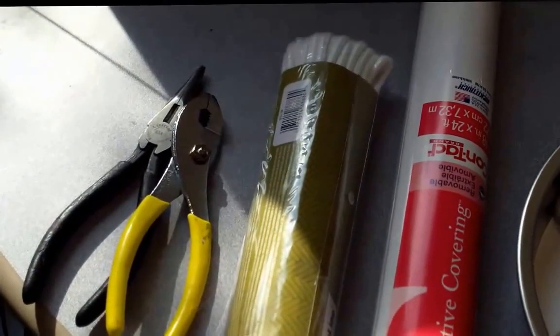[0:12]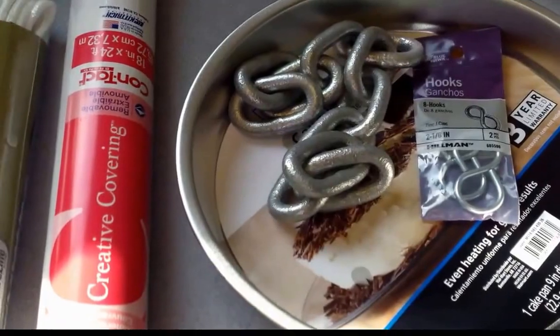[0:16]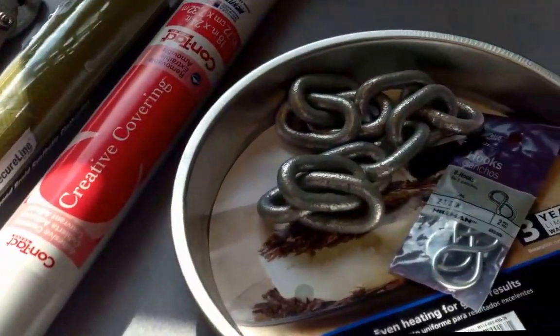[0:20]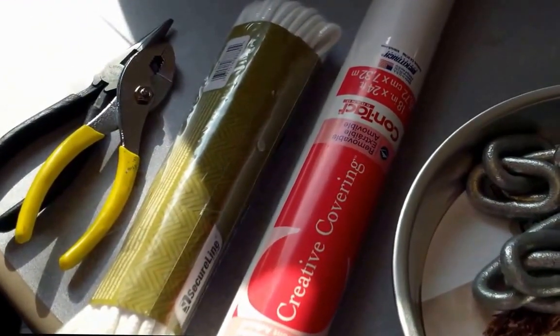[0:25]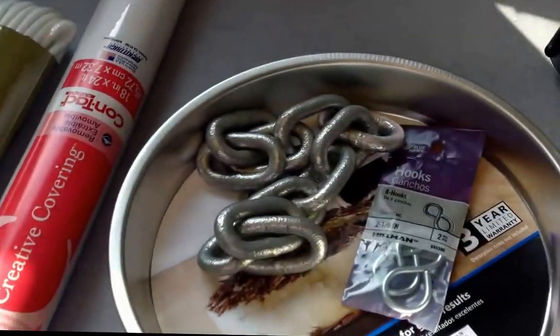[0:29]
Okay, here's another limnology hack. If you are having a limnological emergency and really need to be able to take a Secchi disc transparency reading and you don't have a Secchi disc, you can put one together pretty easily and pretty cheaply. And this is pretty much all the stuff you need in order to do it.
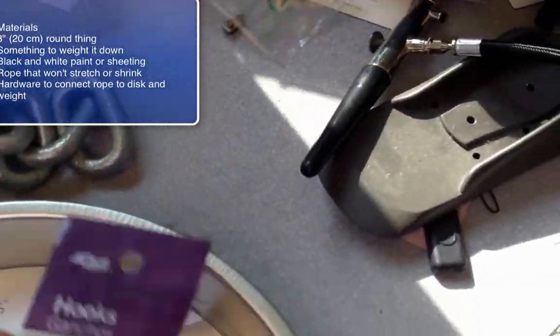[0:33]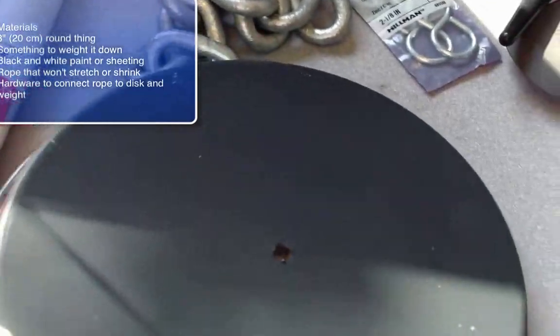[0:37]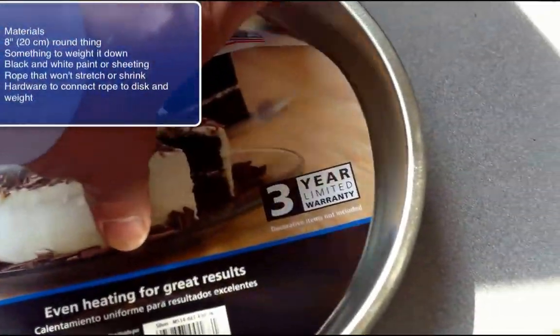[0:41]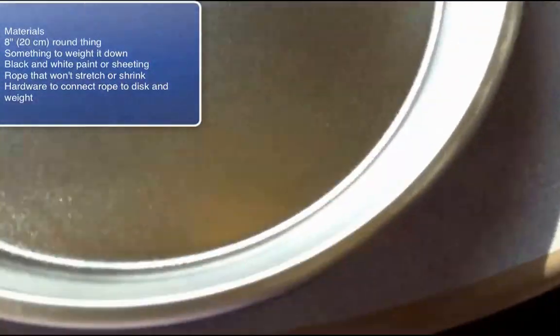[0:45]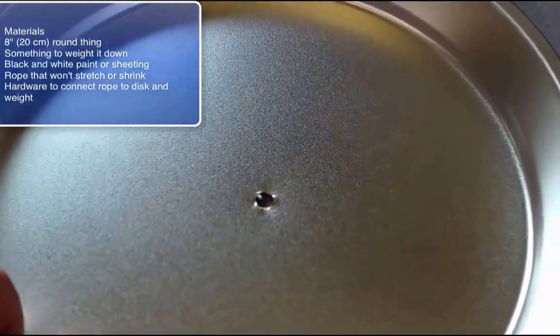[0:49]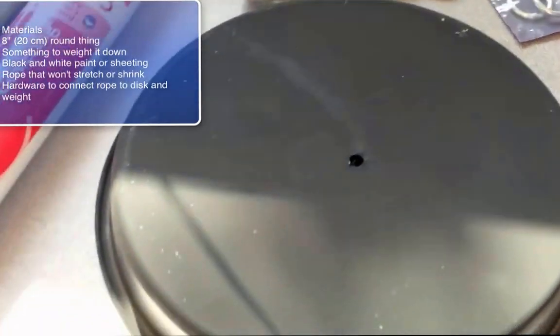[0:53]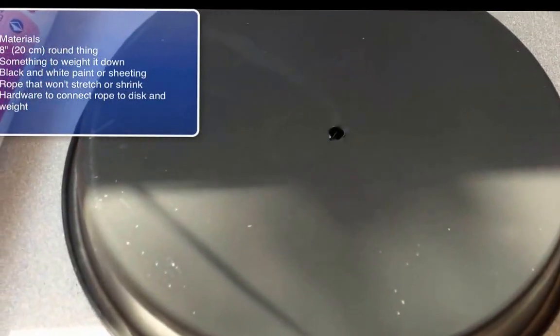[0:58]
The first thing you need is something round, about 8 inches in diameter. This is a cake pan. It cost 88 cents. You can find it at a discount store. What I've done for this cake pan is to drill about a quarter inch hole dead center in this thing. And the other thing I've done is to get a little black paint and paint the bottom surface of it. And the reason for that will be apparent in just a second.
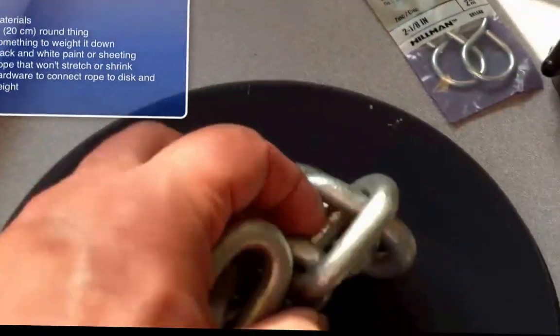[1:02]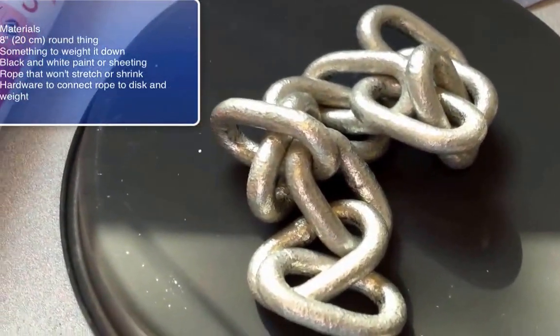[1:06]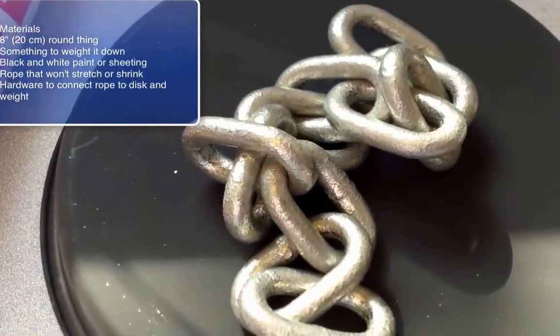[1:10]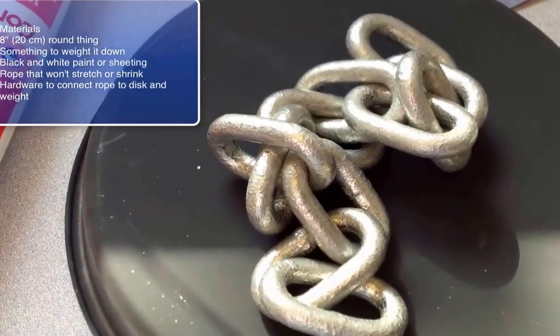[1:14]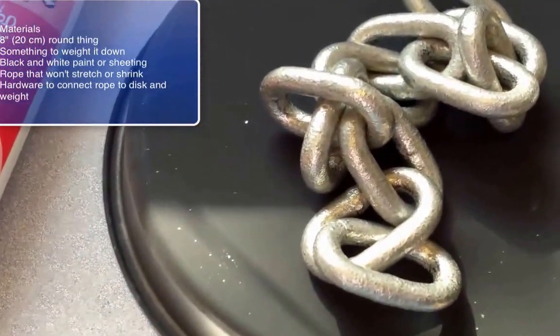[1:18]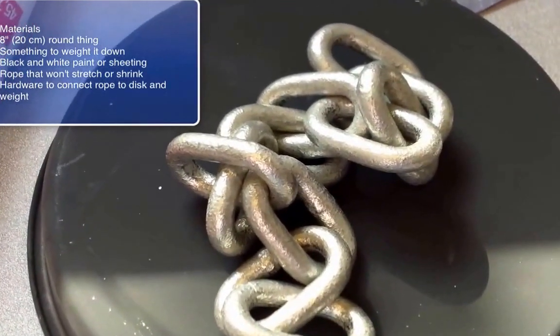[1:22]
The other things we need are something heavy. This old galvanized chain stuff. Well, you probably have something heavy around you can use for this, but all you need is something to go on the underside of your Secchi disc to hold the thing down when there's some waves or currents. So this was the cheapest, heaviest thing I could find in a hardware store. It's about 20-30 centimeters of heavy galvanized chain.
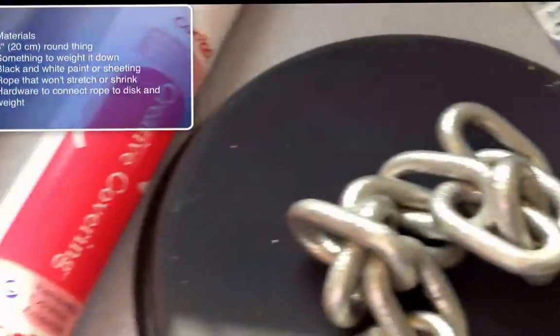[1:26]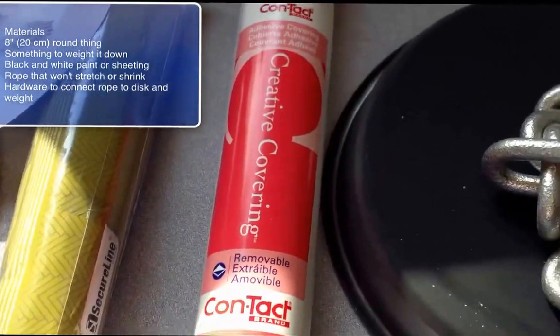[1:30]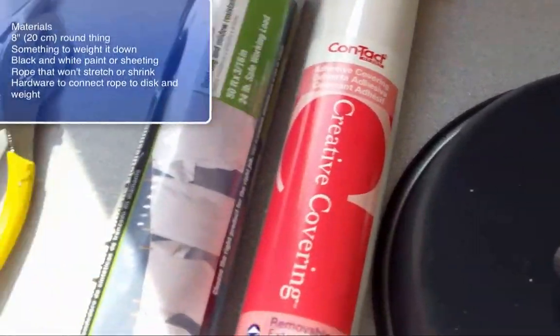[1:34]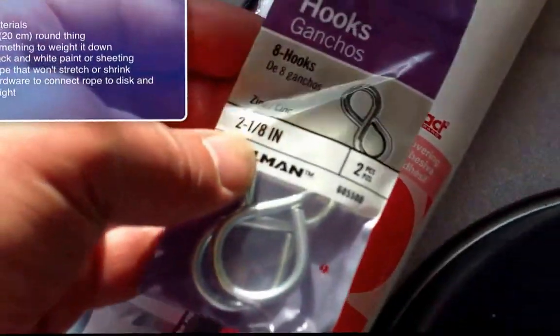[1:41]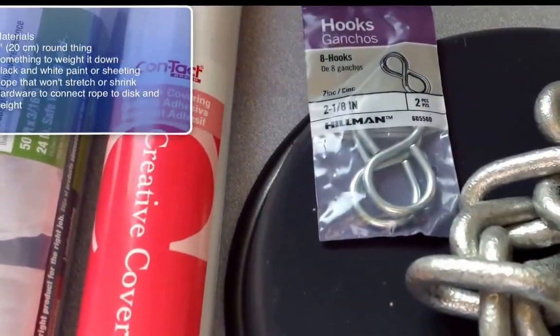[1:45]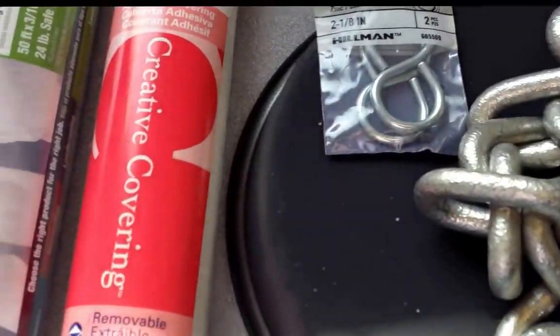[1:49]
You probably could use some of this contact paper. This is a shelf liner. It's plastic stuff with adhesive on the back. And here's some non-stretching rope that you'll probably need too, and you need something to attach the heavy thing to the Secchi disc. I found some kind of double-eyed hooks here, and we'll see if we can make that work. And you might need a couple pair of pliers and a pair of scissors, and that's pretty much all you need.
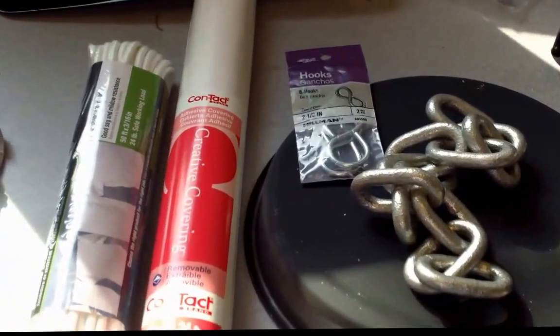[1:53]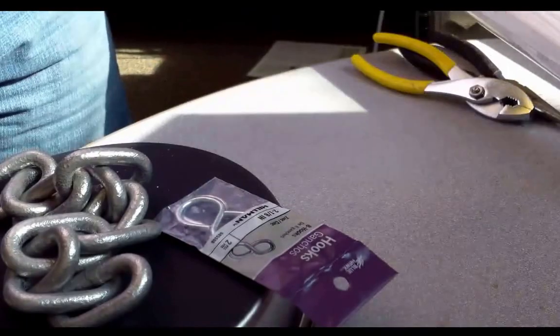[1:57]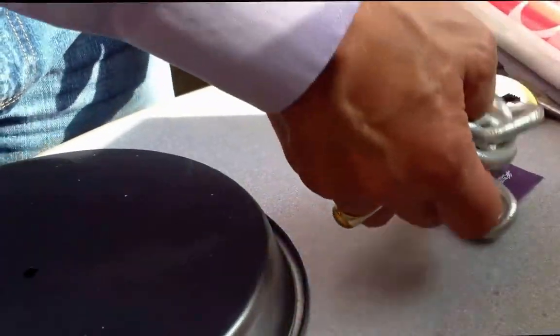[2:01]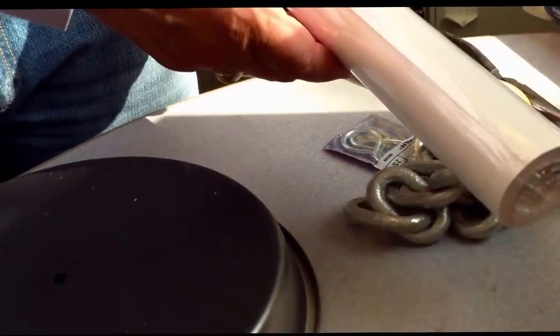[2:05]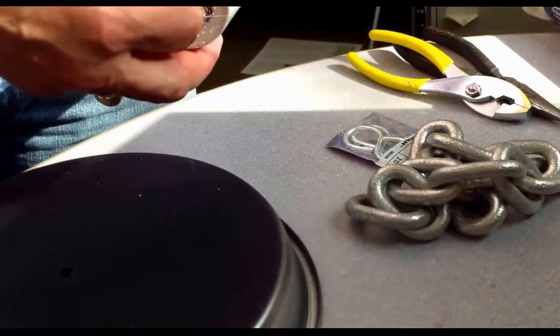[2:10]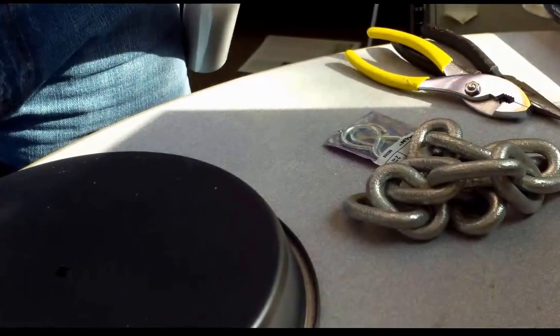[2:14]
So here's one way to do this, and I'll try and do it kind of quickly so that you won't get too bored. But the idea here is that we need to use this as a disc. We have to get some white pieces on here, and then we need to attach it to the heavy weight and the line and calibrate the line.
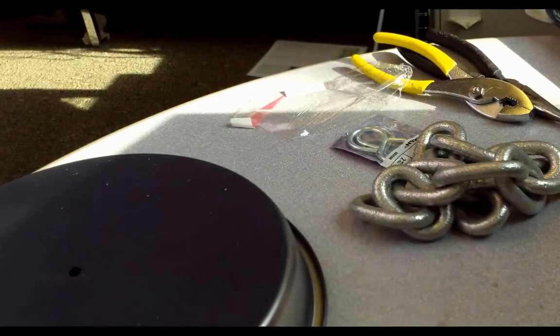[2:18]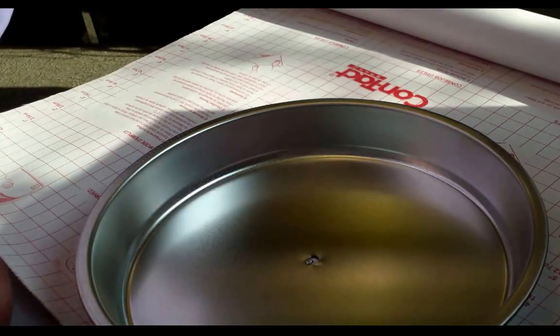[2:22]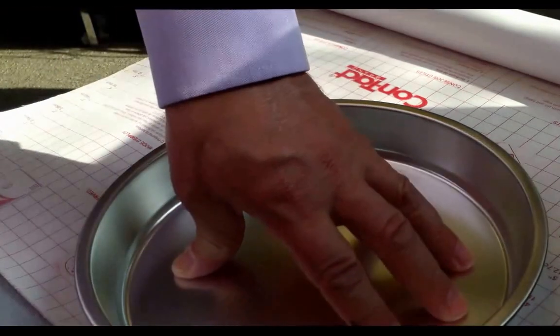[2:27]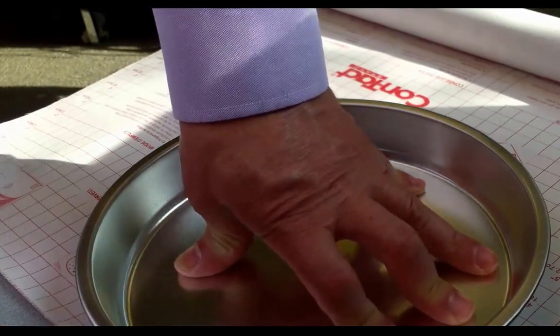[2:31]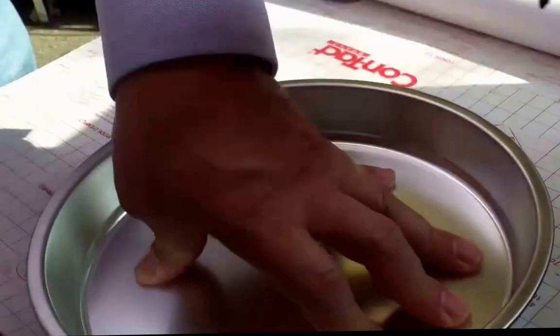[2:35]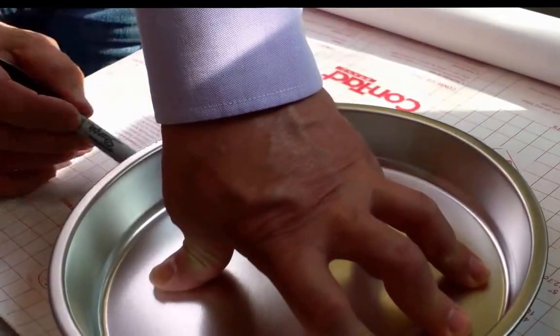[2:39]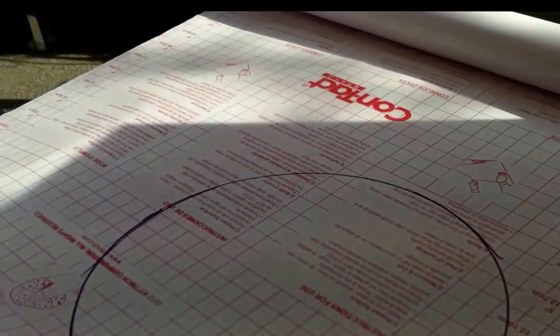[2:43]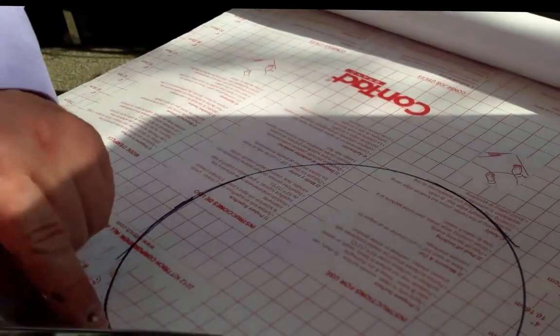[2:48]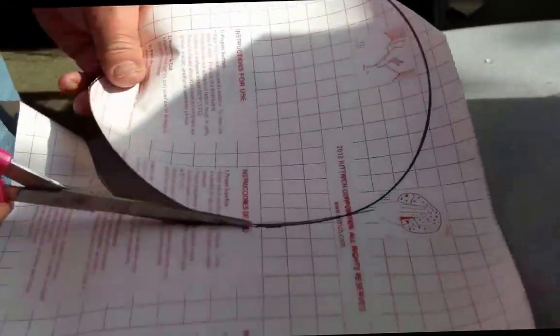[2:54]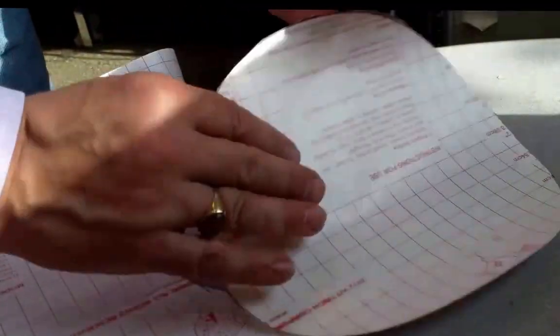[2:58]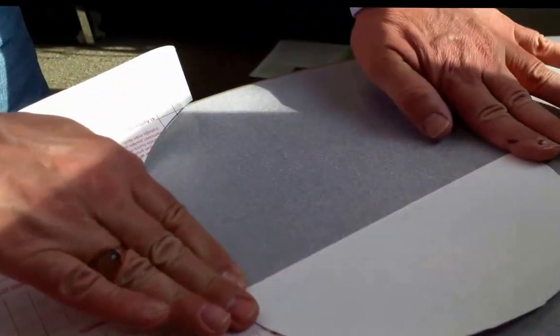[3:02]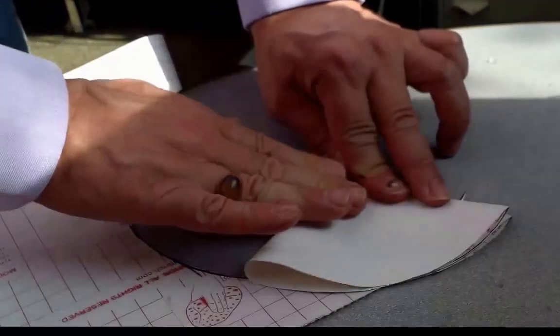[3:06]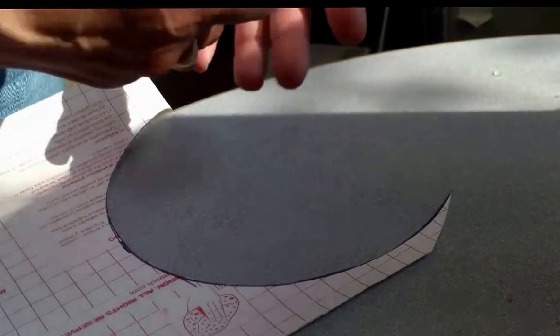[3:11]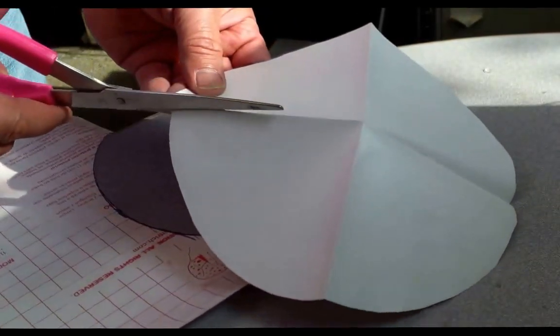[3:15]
Normally a Secchi disc has four quadrants, two white ones and two black ones, at least the ones we use. So what you first want to do is get a circle of white, and you can just trace around the black bottom of this lovely cake pan. Now what we need to do is fold this in half and in half again, and that'll tell us where our four quadrants are. And then you simply want to slice out two of them. You basically cut down these lines.
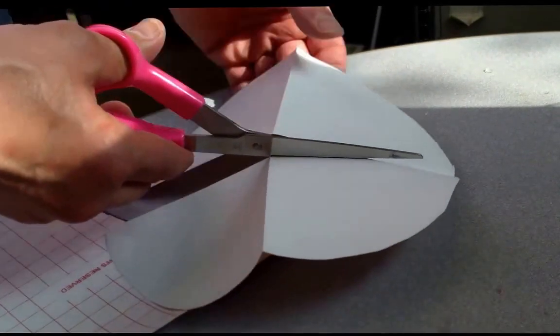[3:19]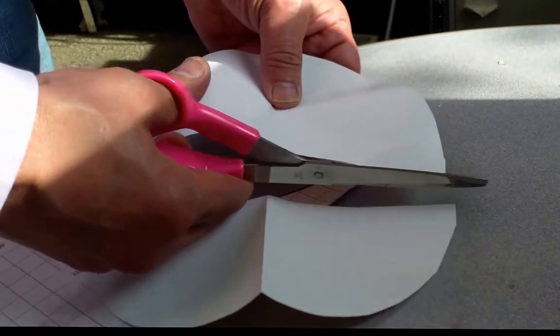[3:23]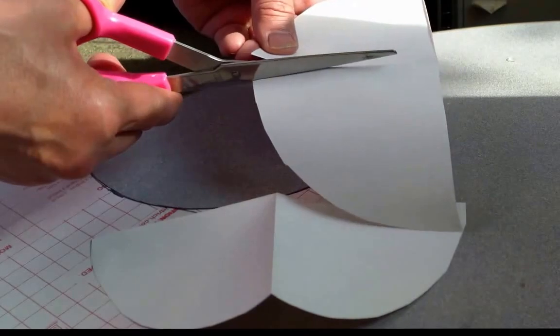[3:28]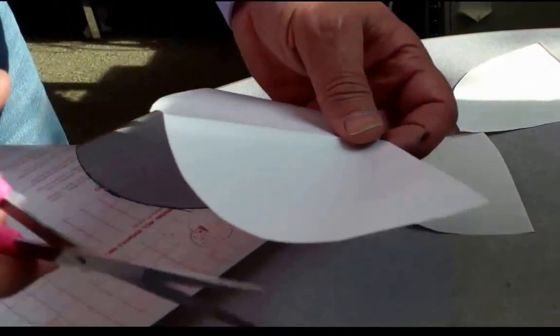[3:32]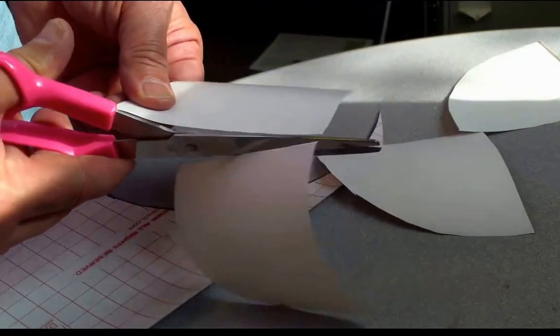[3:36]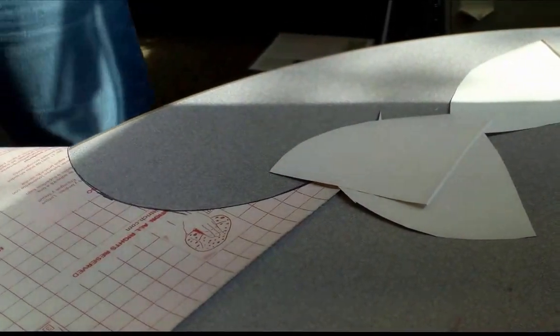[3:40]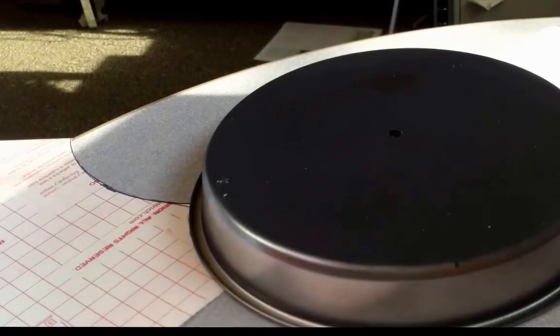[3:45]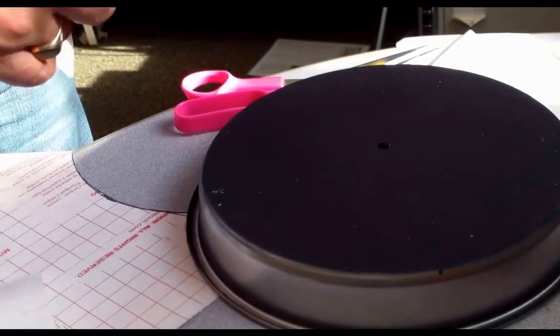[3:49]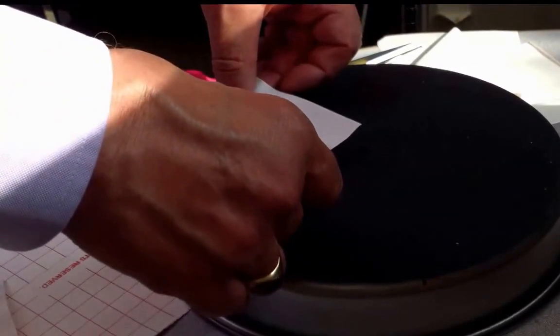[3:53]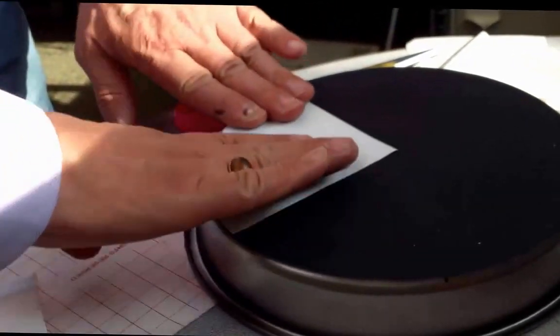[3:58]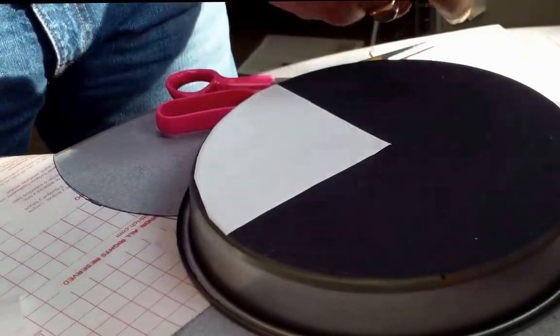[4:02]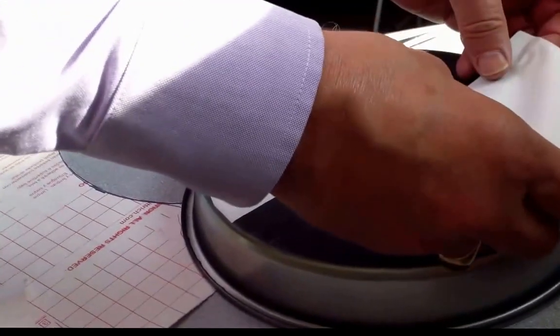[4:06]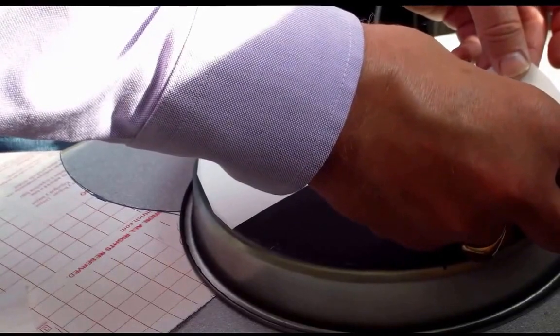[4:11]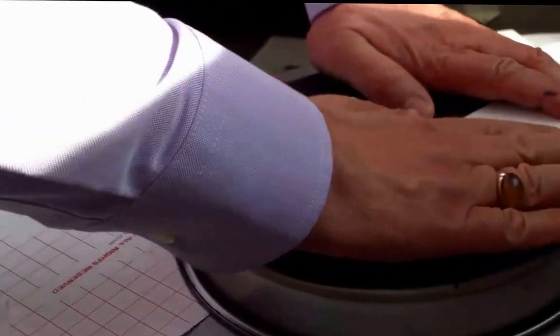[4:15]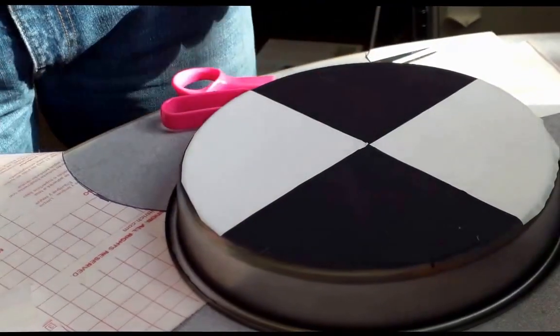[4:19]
You could do this with actual paint on the pan, or you could do it with duct tape, black and white, or whatever you want to do. The idea is to get two quadrants of white and two quadrants of black on the bottom of the cake pan. Just remove the backing from this plastic material and place it on the bottom of the cake pan. Try to get it straight, although it probably isn't super critical. So there we have our Secchi disc created.
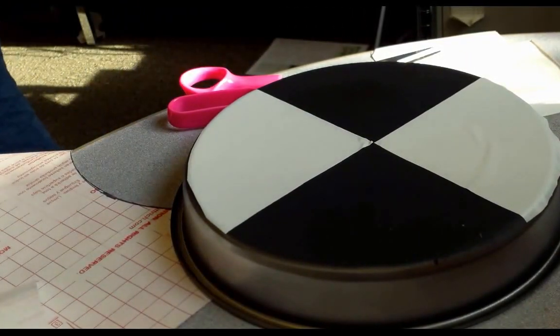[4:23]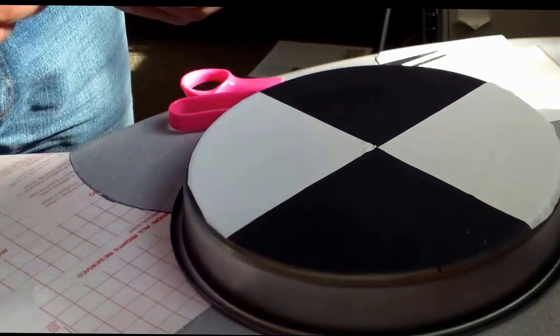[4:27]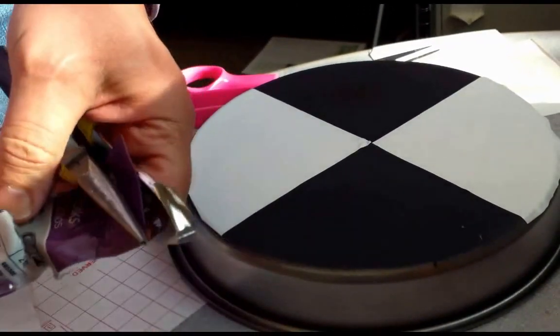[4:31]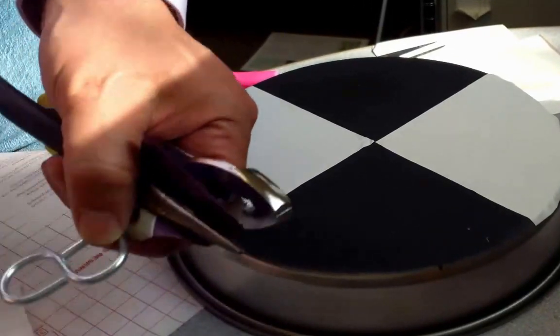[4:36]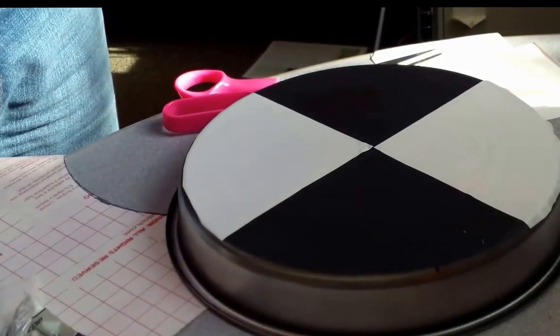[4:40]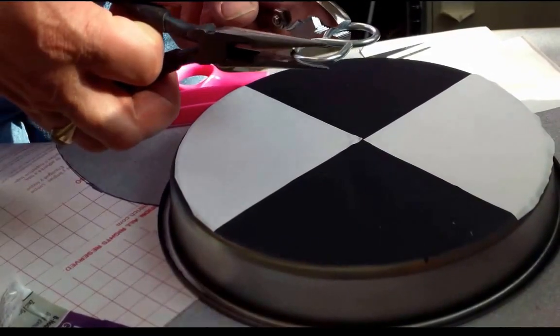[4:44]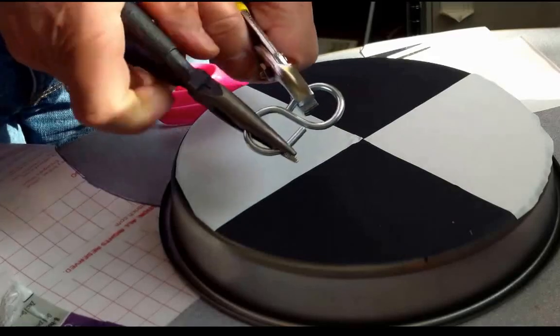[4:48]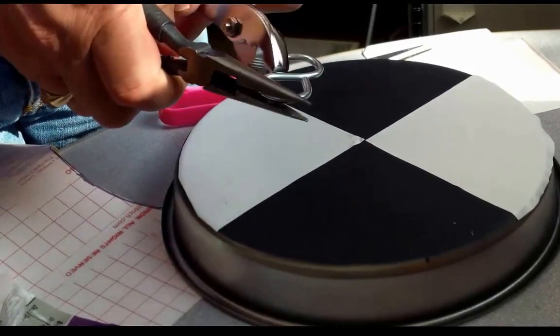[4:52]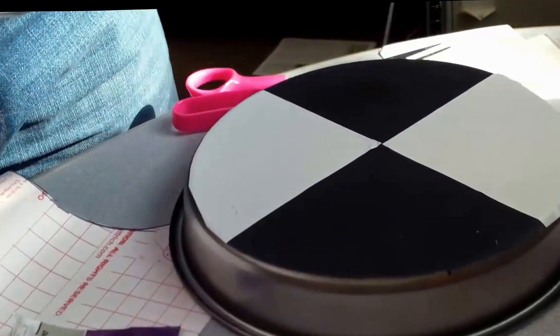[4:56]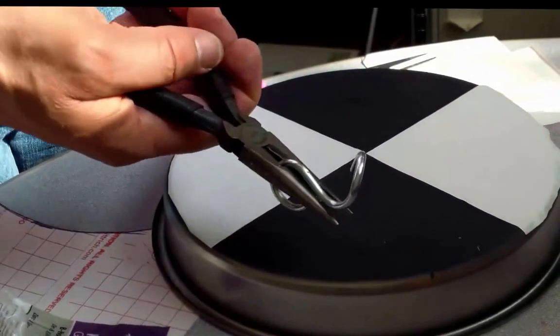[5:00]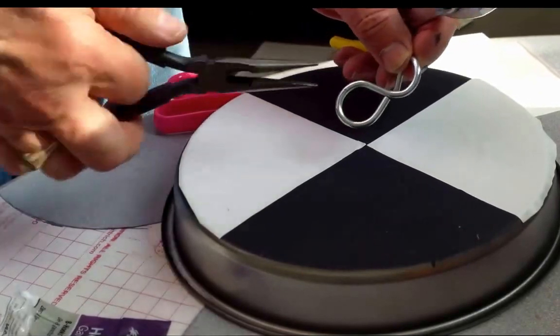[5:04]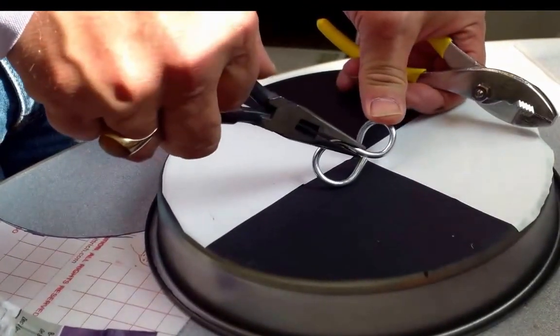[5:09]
The next step is to hang the weight on the bottom of it. So we have these things, but you can figure out any way you want to do this. This is one that I thought might work really well, and we'll see in just a second if I was right. Basically what I'm doing is leaving one loop intact to go on the top and opening the other loop to go down on the bottom to hook onto the heavy chain that I have, and I hope that'll work okay. Well, that was a bit of a tussle to get this thing open, but I'm doing it in my office with really minimal tools, so I figure you may be doing this in the field yourself.
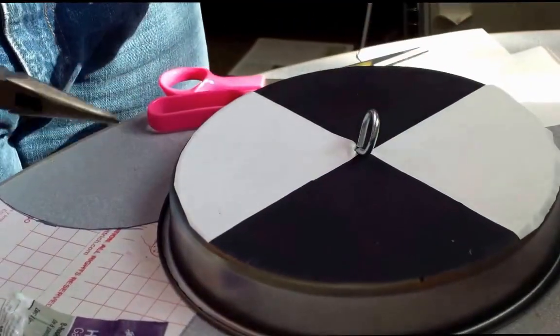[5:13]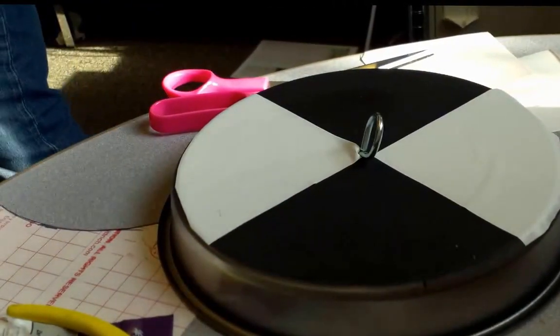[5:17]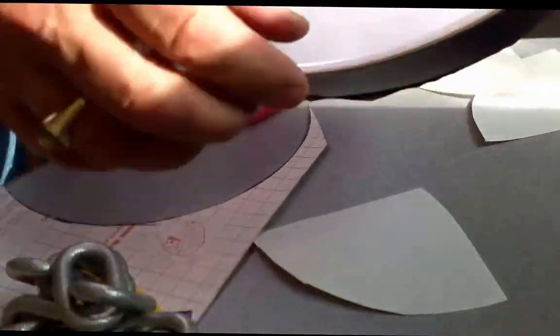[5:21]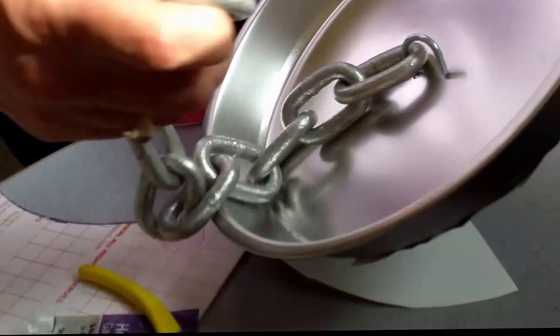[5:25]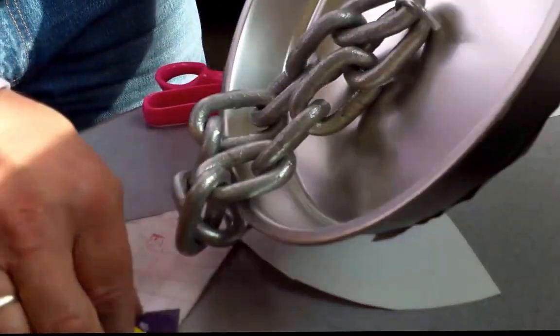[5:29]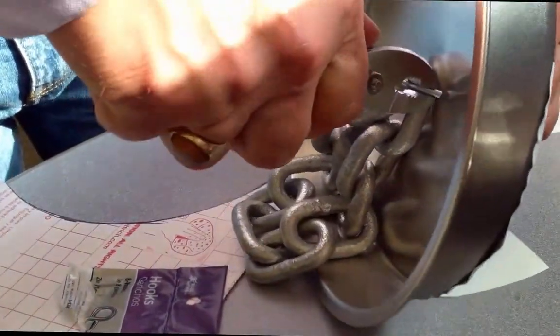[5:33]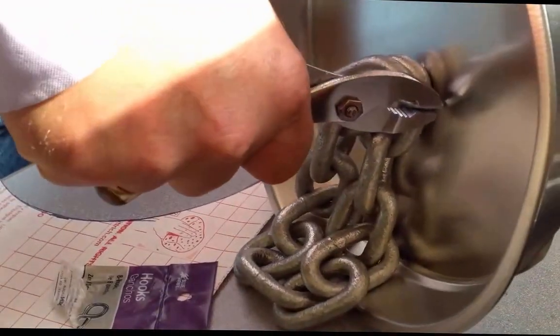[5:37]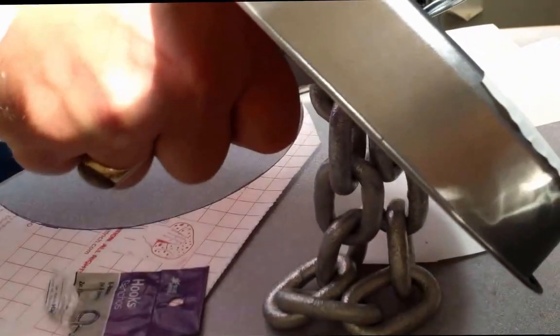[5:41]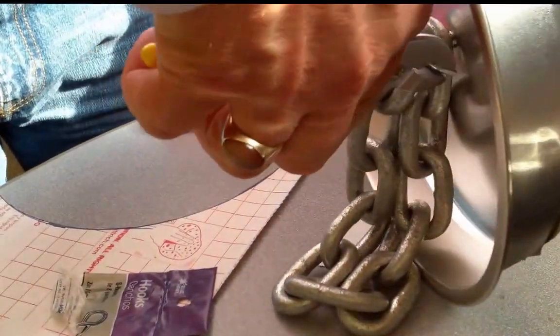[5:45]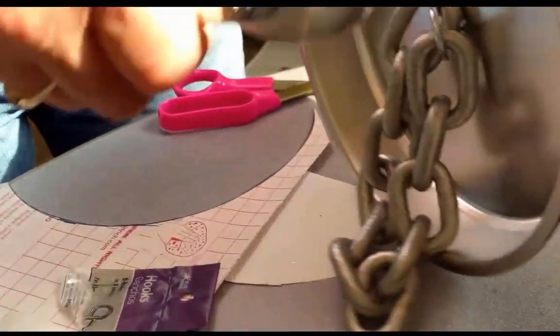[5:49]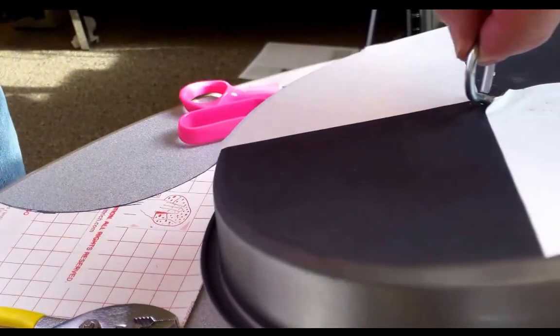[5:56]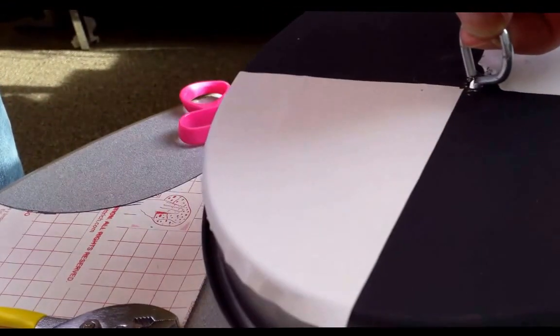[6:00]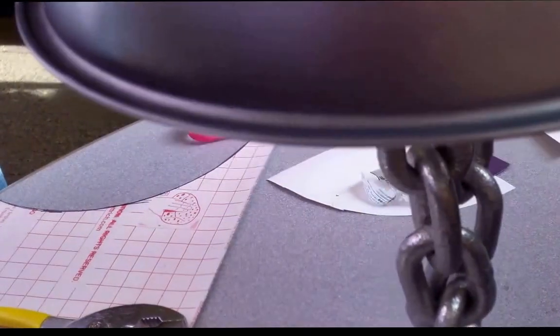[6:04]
Now I place this thing through this hole here, and we've got a loop on the upper end. Hopefully, down under here, we're going to be able to loop two links of the chain on here, and maybe if we're lucky, there'll be room to close this hook back so that the chain won't fall off. Take a couple of pairs of pliers. A bit violent. Yeah, so there I've got the chain connected. You might have to mess around with the connector a little bit until you can get it to hang pretty much horizontally, so that when you lift it into the water column, it's actually horizontal. But this will work pretty well, I think.
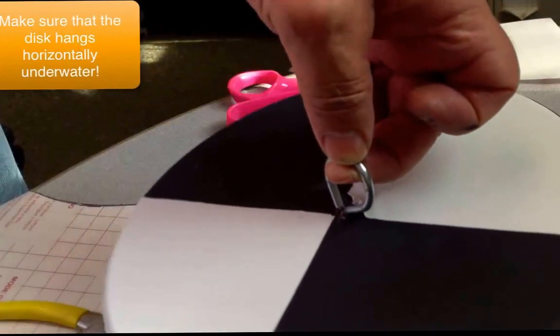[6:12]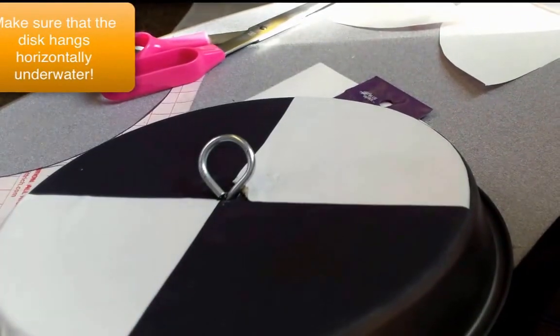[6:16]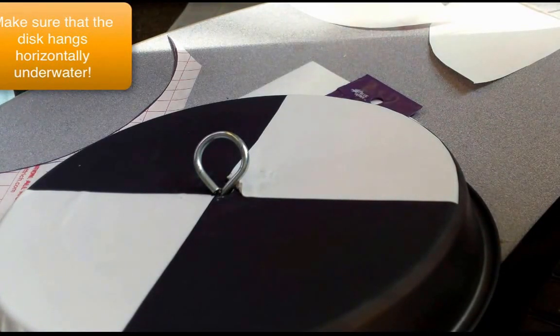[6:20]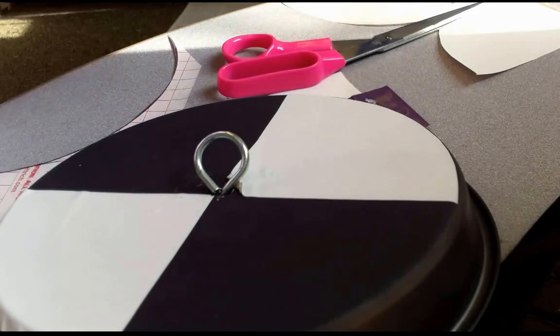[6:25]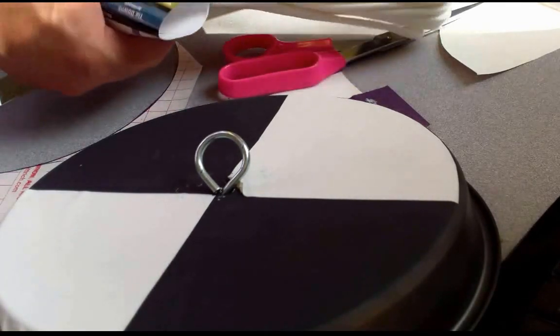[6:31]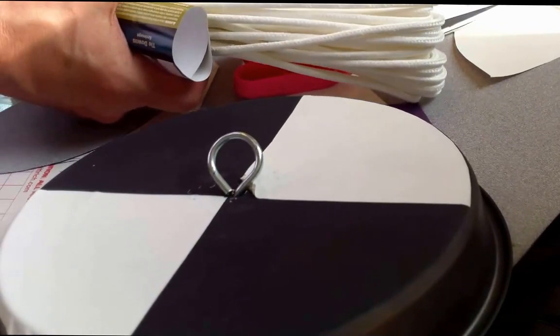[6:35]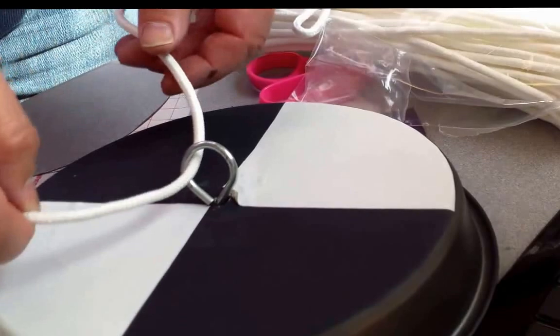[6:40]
So our next step on this, and very exciting, huh? Our next and final step is to put our cord on there so that we can lower the Secchi disc down through the water column and take note of when it disappears, at what depth it disappears. So you're going to want to have some non-shrinking line that won't actually stretch or shrink as you lower it into the water, and tie a simple knot on here.
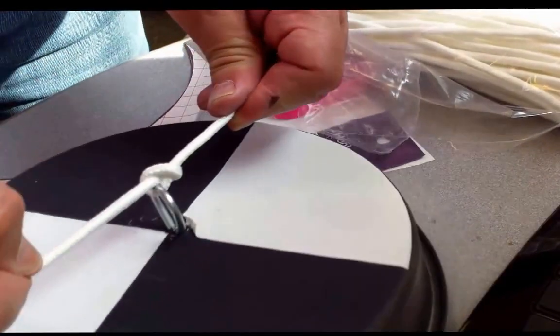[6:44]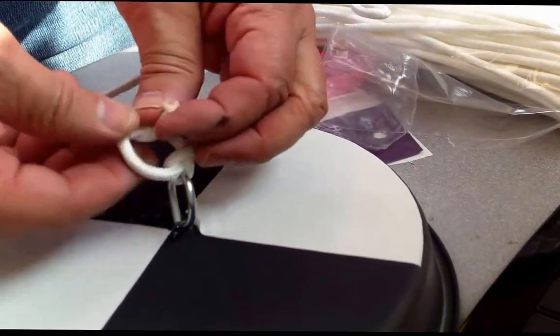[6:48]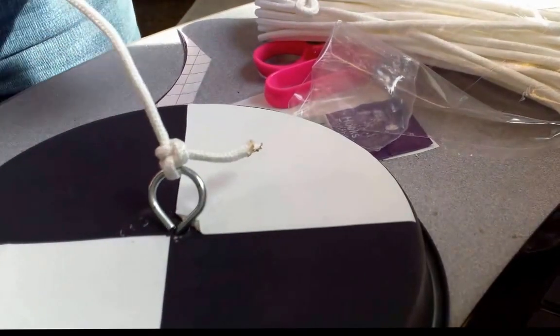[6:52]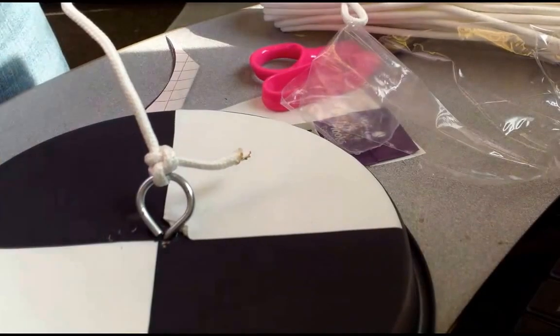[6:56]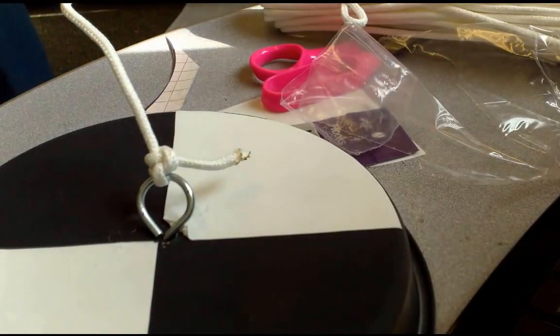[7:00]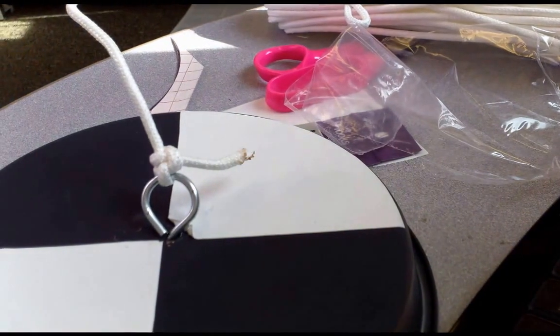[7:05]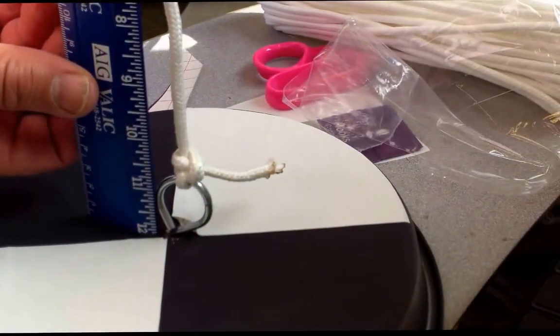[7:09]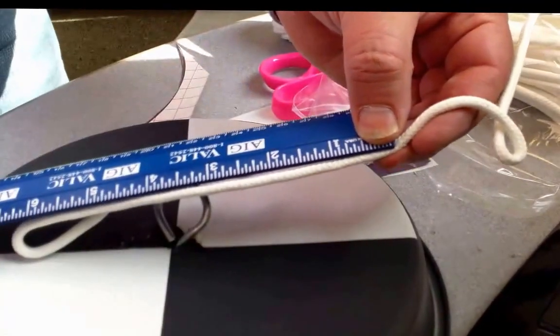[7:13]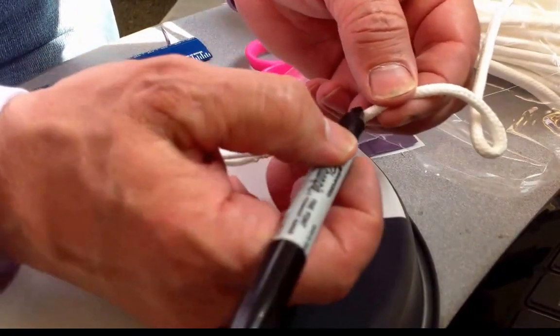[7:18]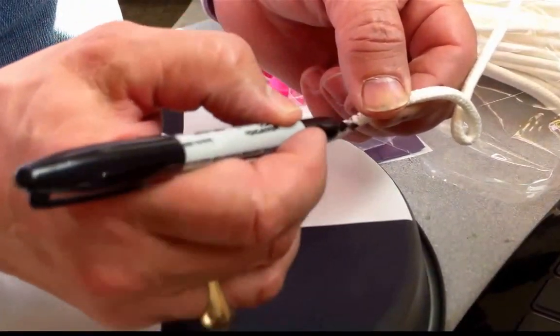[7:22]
Clove hitches like that, and then the next thing you want to do is mark the line at various depths from the surface of the Secchi disc. You can do this with a tape measure and a Sharpie pen or something like that. So let's say we are working in the United States and we want to do these measurements in feet. We'll put a mark every foot with a marker until we get a nice dark mark that we can read.
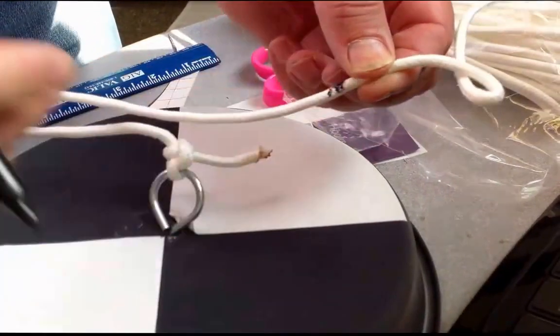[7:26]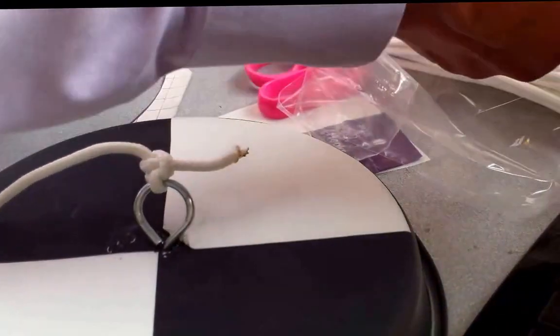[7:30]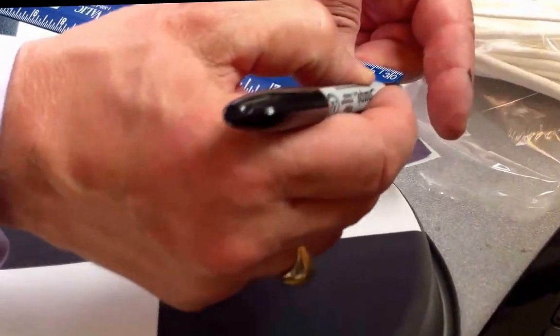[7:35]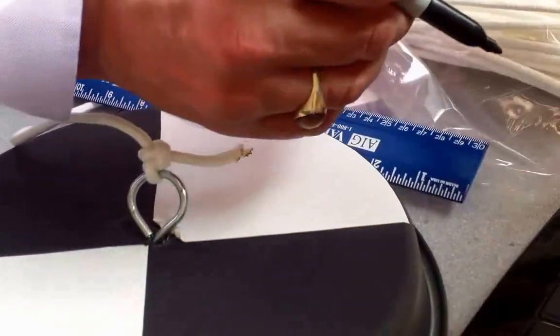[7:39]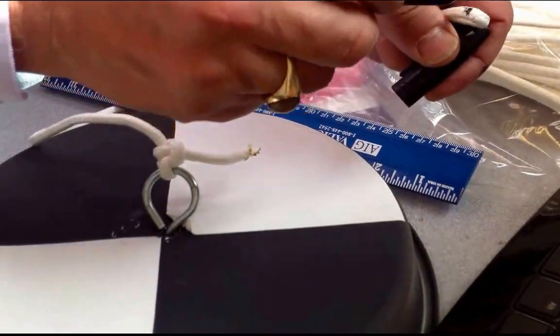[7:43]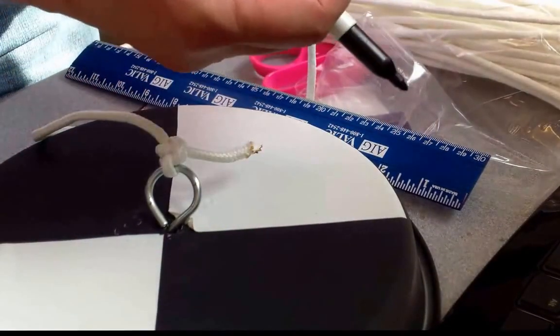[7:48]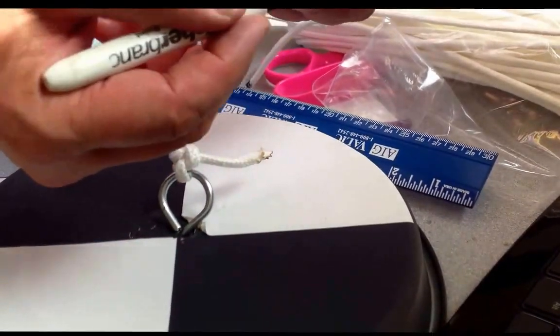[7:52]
You can use different colors if you want, but the point is you're going to be wanting to count down the depth and see where the Secchi disc disappears. Here's another foot mark, and then one does another and another until you've calibrated your entire line. We have a better marker here. Yeah, that one's better. So mark the line so that you can see it from both sides, and then you're going to count those marks as you lower the Secchi disc down until it disappears.
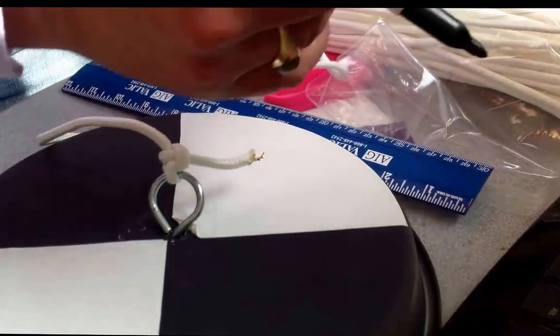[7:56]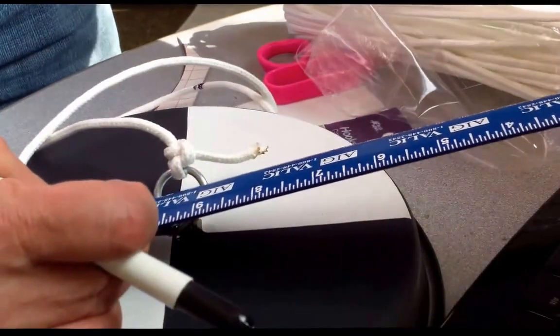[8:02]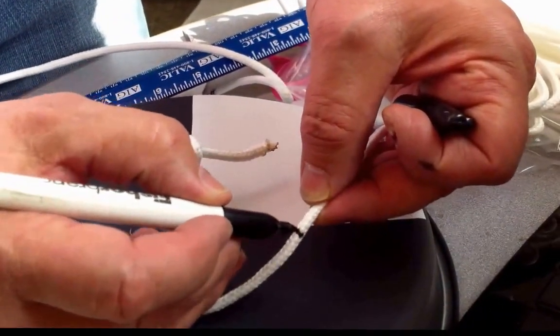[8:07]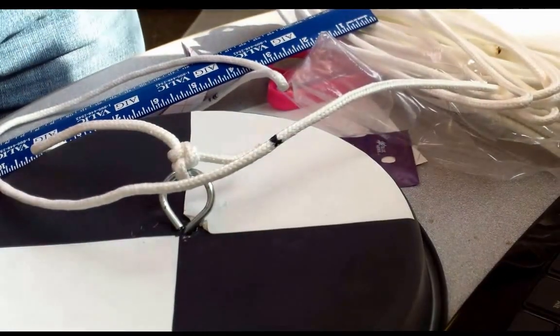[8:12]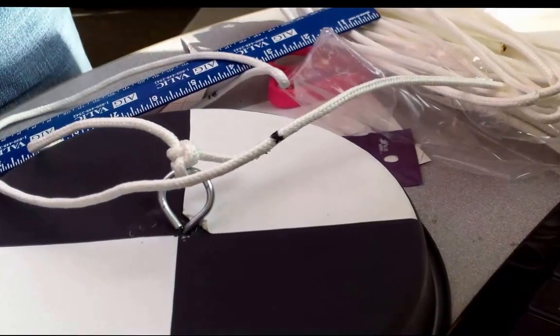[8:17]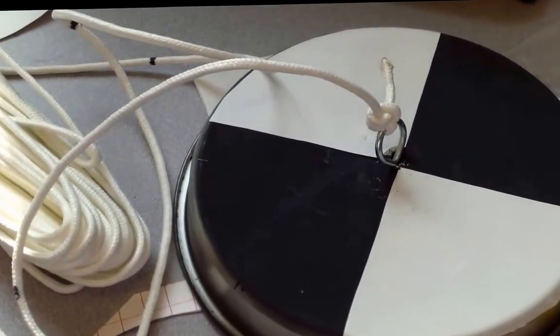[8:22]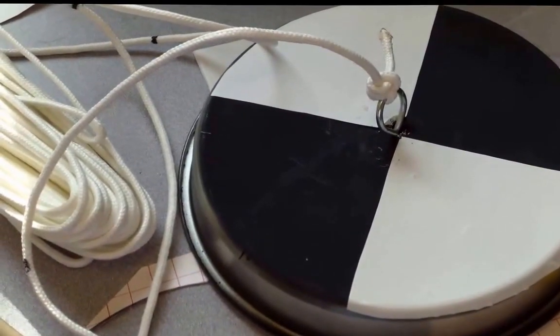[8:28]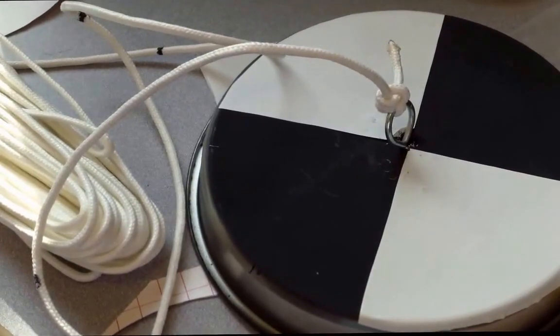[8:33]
Note the depth, the number of marks that have gone past, and then pull it back up until the Secchi disc reappears. The average of those two measurements is the Secchi disc depth. I hope this Limno hack will help you out of your limnology emergency. So there it is, our very functional hacked Secchi disc, made for the cost of, I think, about $7. You could probably make them out of almost anything, but this is one way to work around.